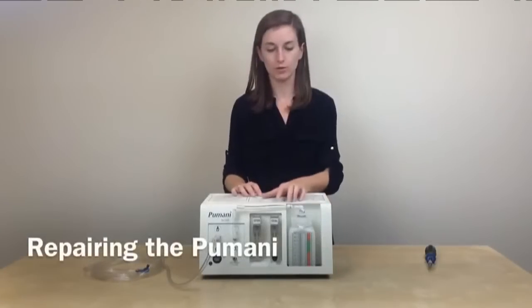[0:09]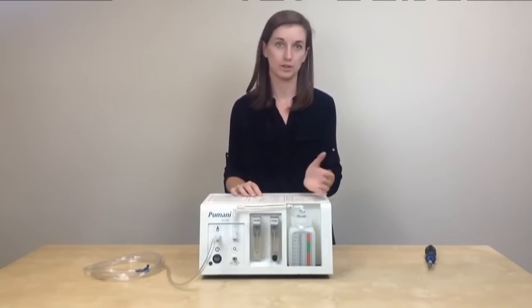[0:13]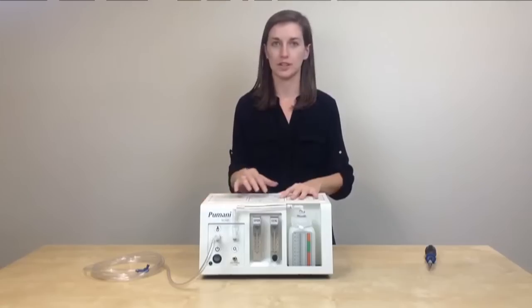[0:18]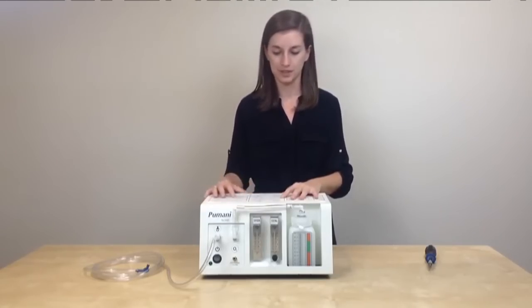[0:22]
If you notice that the total flow out of the Pumani is lower than it should be, so lower than 10 liters per minute, you may need to open up the unit to check for any loose connections, and you may need to replace the filter under the pump. So I'm going to explain how to open the unit, how to check for any loose connections, and how to replace the filter under the pump.
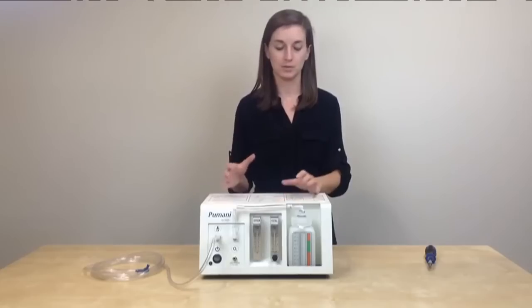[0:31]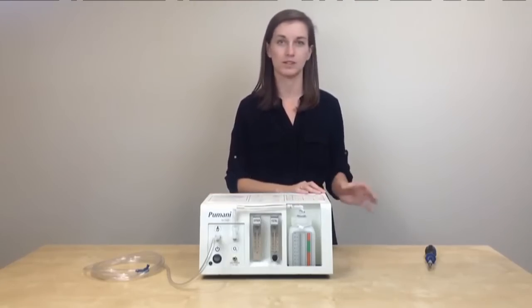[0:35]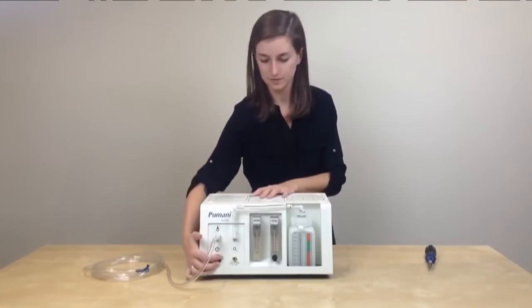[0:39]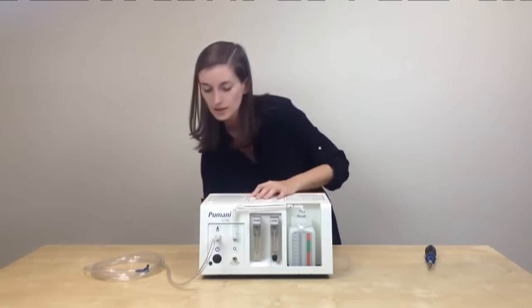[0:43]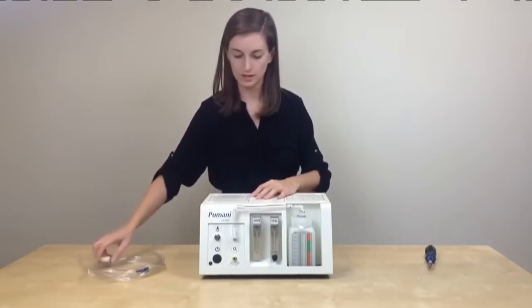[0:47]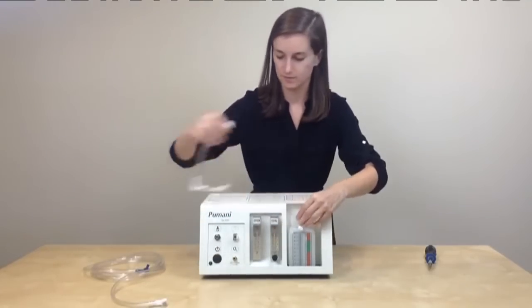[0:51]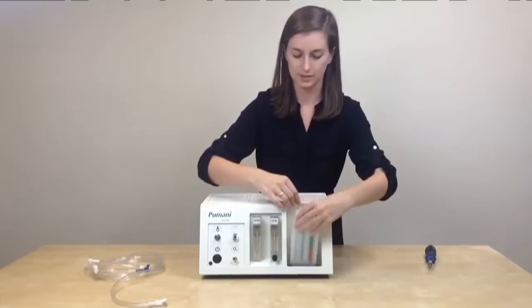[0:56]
So your first step should be to remove the patient from the Pumani, place them on another Pumani unit, or place them on an oxygen therapy. And then you'll want to turn off the unit and unplug the unit and detach the patient tubing from the bottle tubing. And you should also remove the bottle in case the water spills.
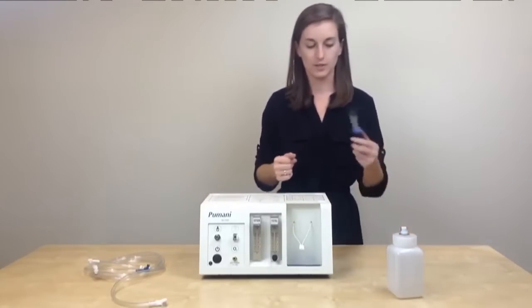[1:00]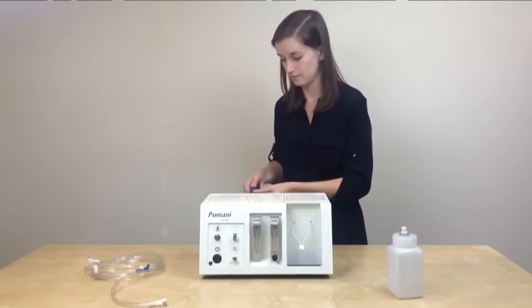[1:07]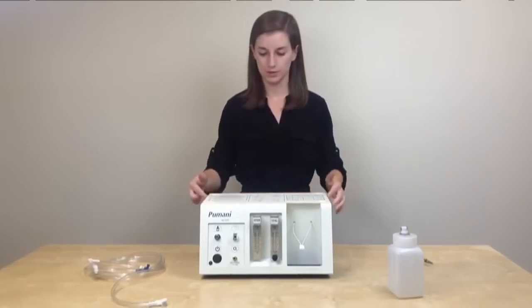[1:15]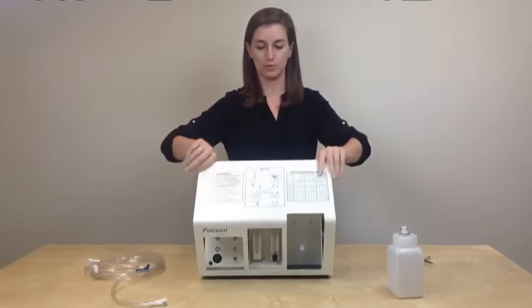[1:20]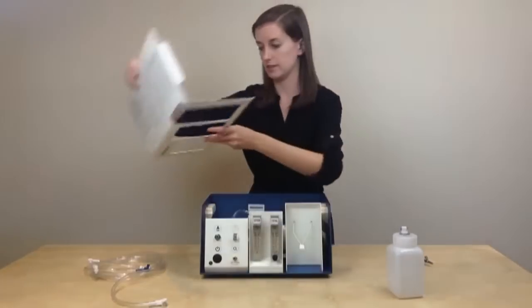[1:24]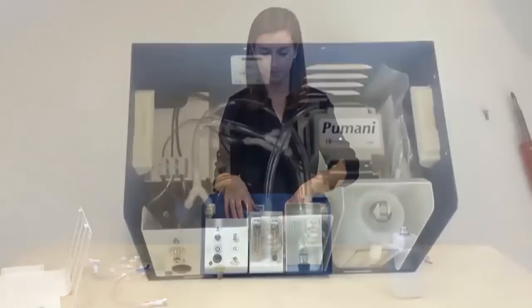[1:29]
And then you will take a Phillips head screwdriver to loosen the 6 screws around the outside of the Pumani. Once you've removed the screws from the outside, you can lift up and remove the lid from the unit. And place the lid aside. And now you have access to the inside of the unit.
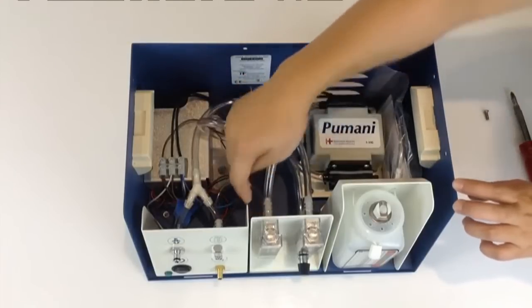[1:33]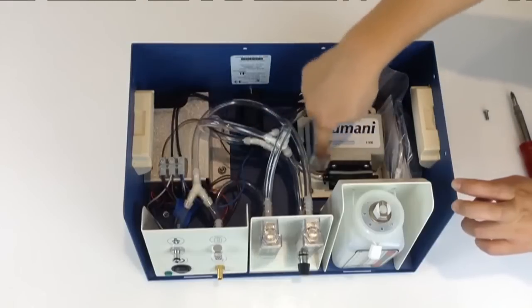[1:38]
You should check all of the tubing connections inside of the unit. Make sure everything is connected. If you notice something is disconnected, make sure to reconnect it and then check the flow again.
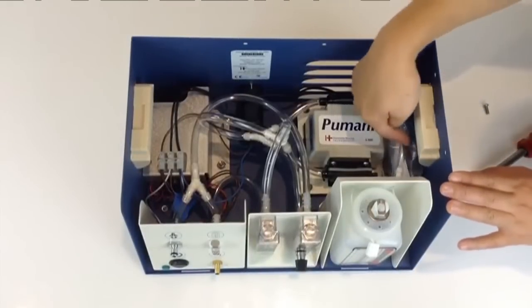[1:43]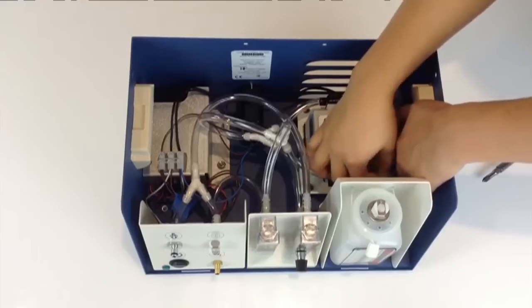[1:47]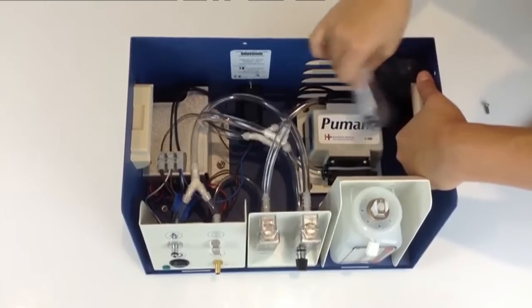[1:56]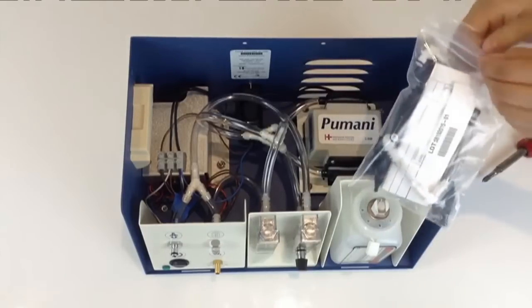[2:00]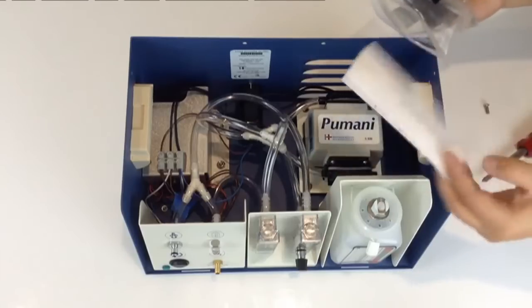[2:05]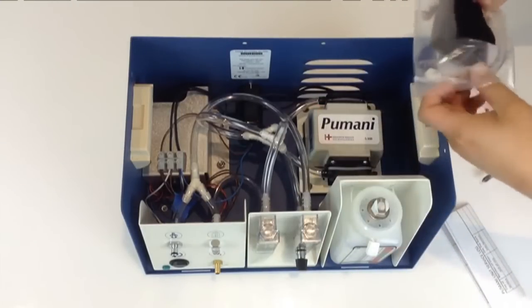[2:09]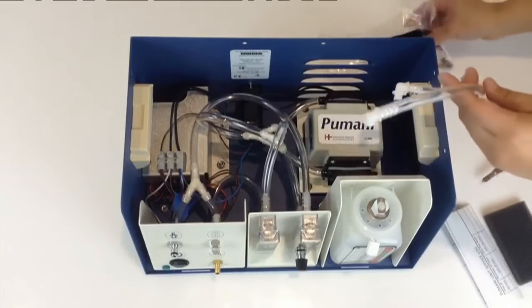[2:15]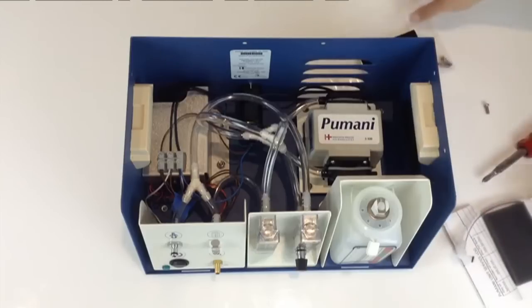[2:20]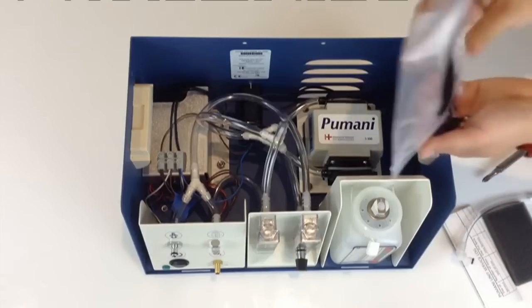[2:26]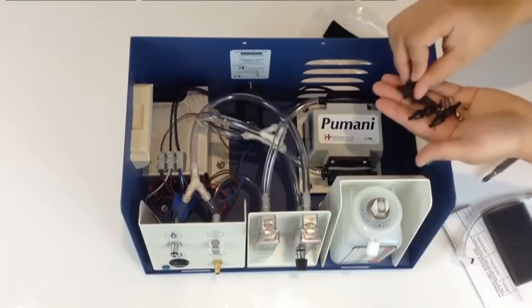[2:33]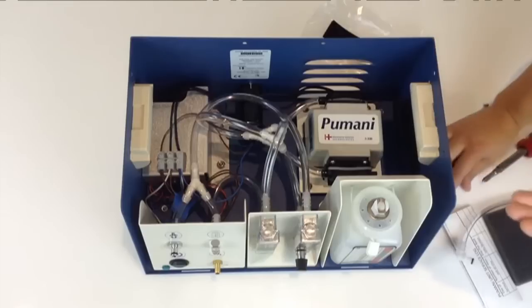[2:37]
Remove the spare parts kit from the wall of the unit and tear it off of the Velcro on the side. And once the kit is removed, you'll want to open the kit and view the contents. The kit should contain the service log, the foam filter that goes under the pump, a bottle tube, and 4 rubber pump feet. Two spare Phillips head screws. And 2 replacement pieces.
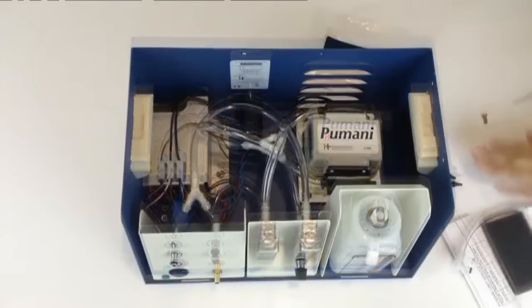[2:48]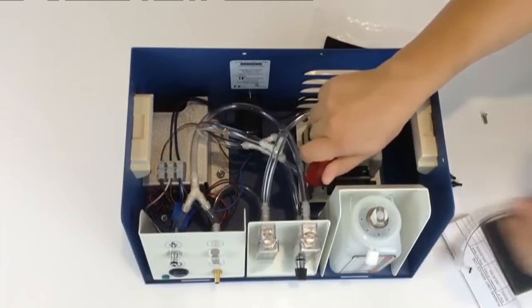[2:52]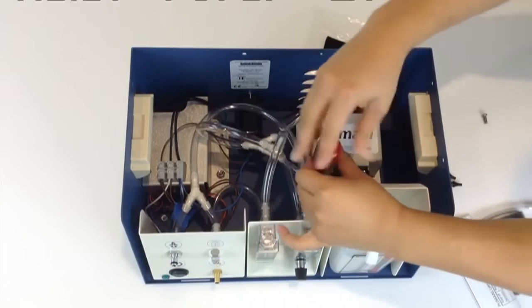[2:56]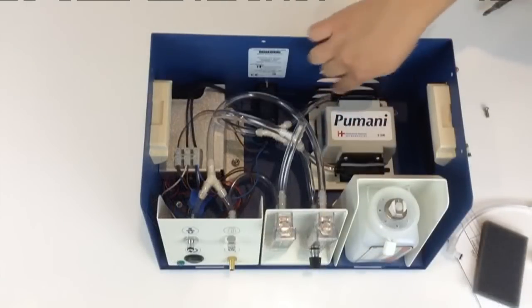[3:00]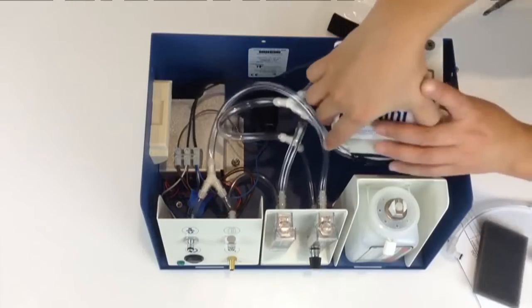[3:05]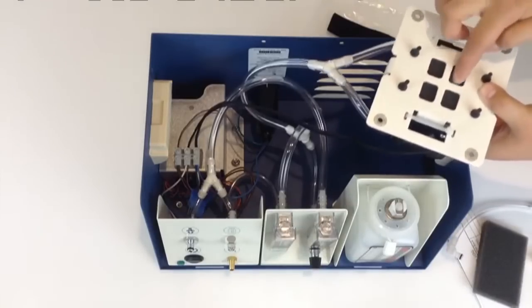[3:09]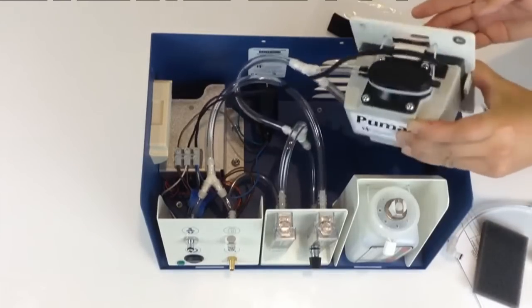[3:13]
To remove the filter, you'll need to remove the pump from the unit. Use a Phillips screwdriver to remove the 4 screws holding the pump to the unit. Once the 4 screws are removed from the pump, you can lift the pump up and out of the unit and turn it over. Check the filter to see if it is dirty. If it looks dirty or clogged, you'll want to remove the filter.
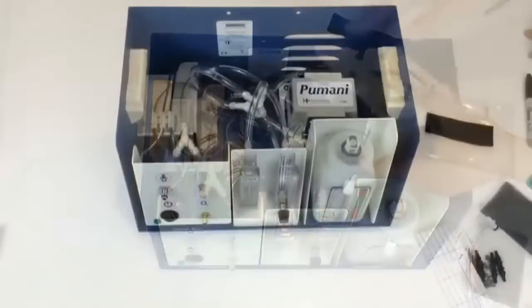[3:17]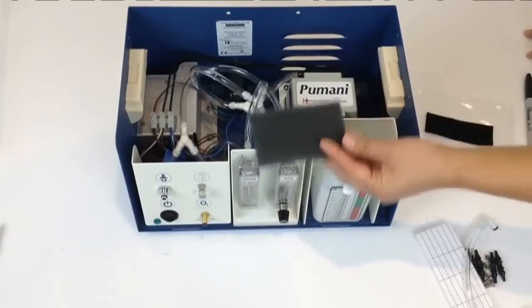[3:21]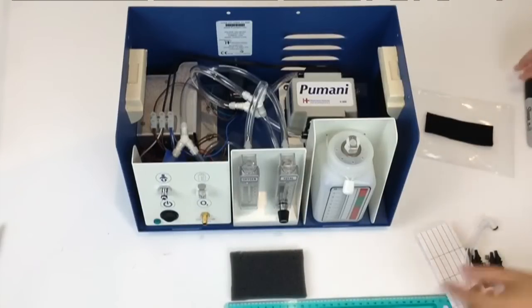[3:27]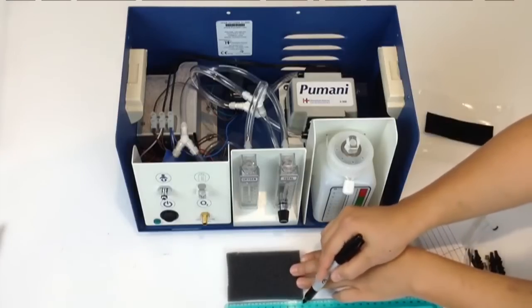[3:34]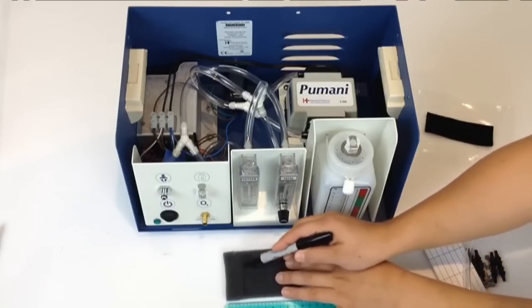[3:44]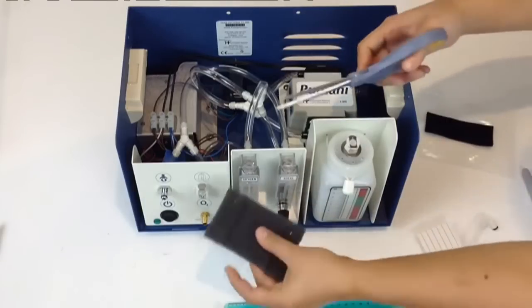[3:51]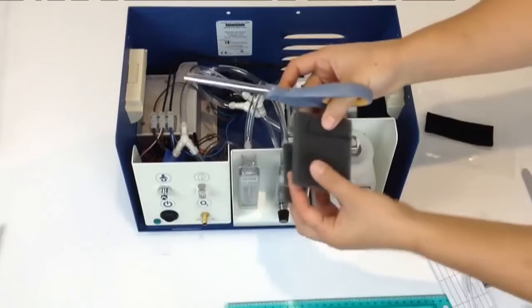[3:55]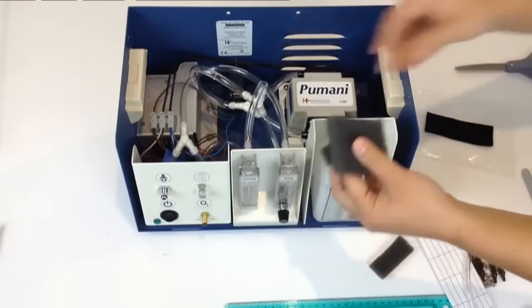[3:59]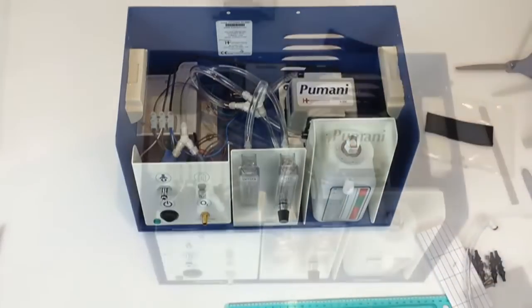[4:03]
You'll take the spare filter from the spare parts kit, and you're going to need to trim the filter down so that you can fit it under the pump. So the length of the filter is 10 centimeters, which you can see here. You're going to trim 2 centimeters off of one side and 2 centimeters off of another. So you can mark it at 2 and at 8 centimeters with a Sharpie. Then you'll take scissors and you'll cut along those 2 lines, trimming 2 centimeters off of each side of the filter. And now your filter is ready to go under the pump.
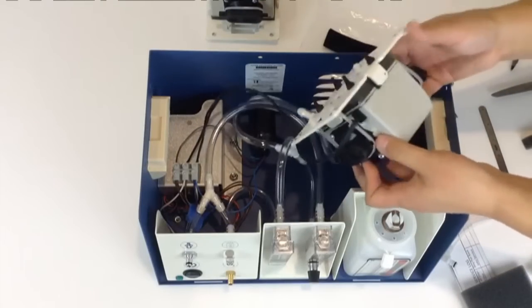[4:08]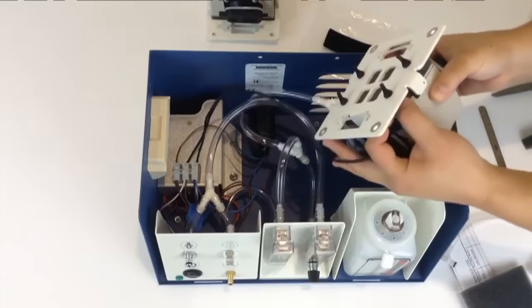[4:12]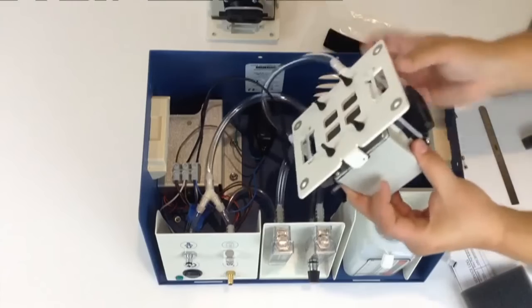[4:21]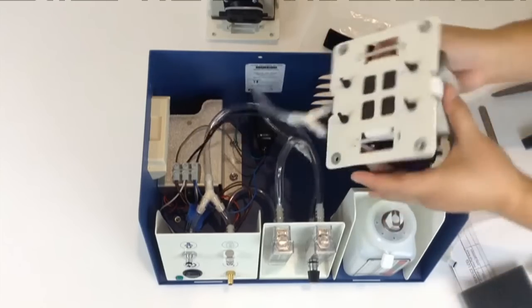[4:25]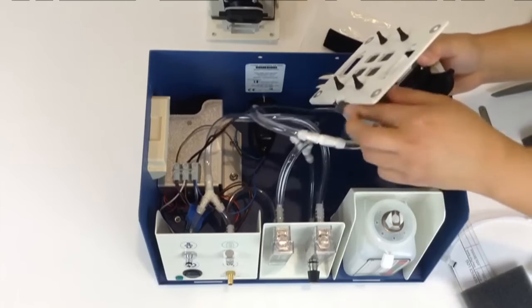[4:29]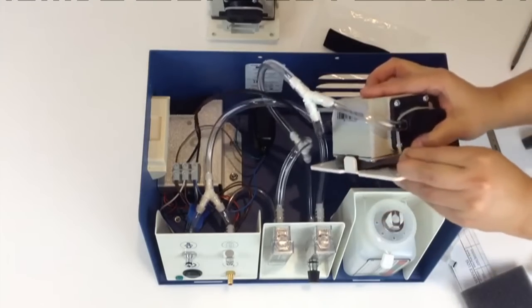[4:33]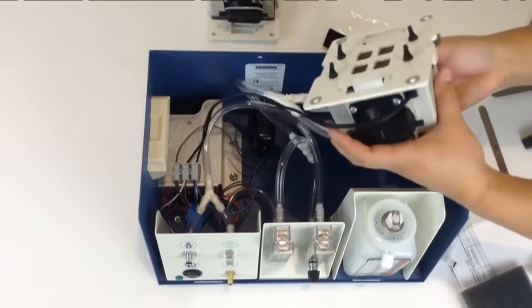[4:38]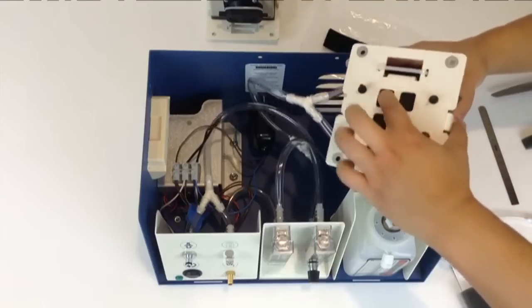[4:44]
You're now going to remove the old filter, take the pump and turn it upside down. You'll need to tear the filter out from under the base and tear it around the 4 rubber feet under the pump. You'll need to pull fairly hard to completely remove the filter from around the 4 feet. So continue to pull on the filter, tear the filter until it's completely detached from all 4 feet. And once the filter is torn around the feet, you can push the filter through that hole with your finger. Continue to push on the filter and try to slide it out from under the base.
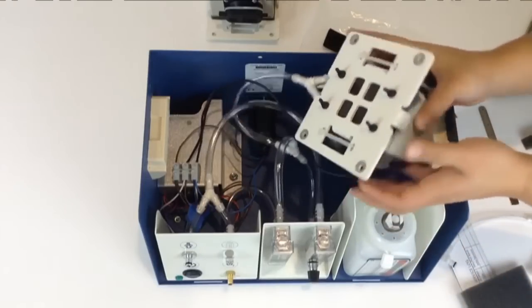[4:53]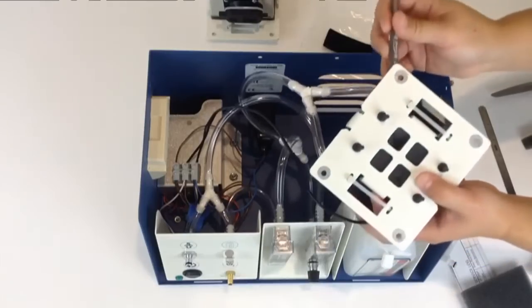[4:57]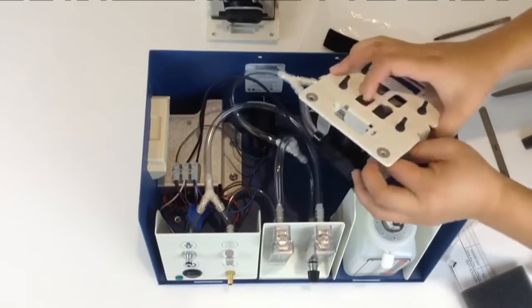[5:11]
You can also take a pen or a small pointed object and push on the filter through one of the corners until the filter becomes loose and you can pull the filter out from under the base. And once the filter is removed, set it aside and throw it away.
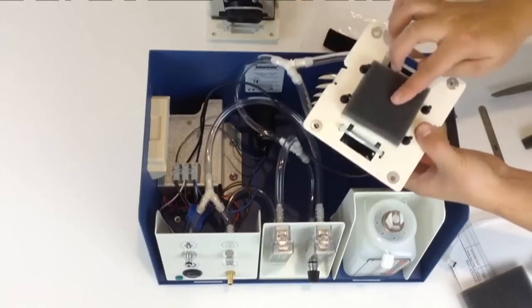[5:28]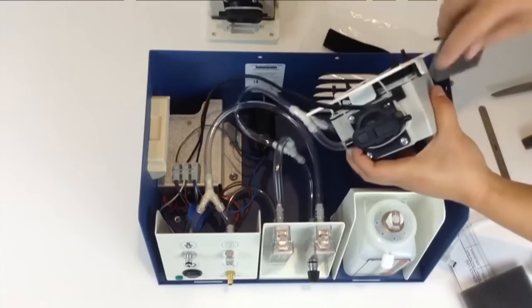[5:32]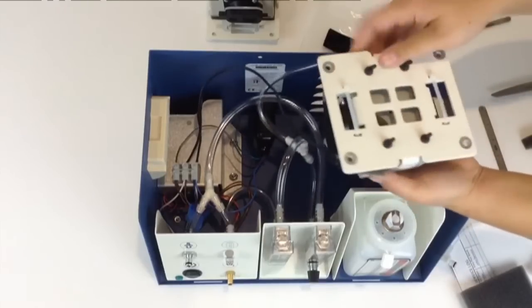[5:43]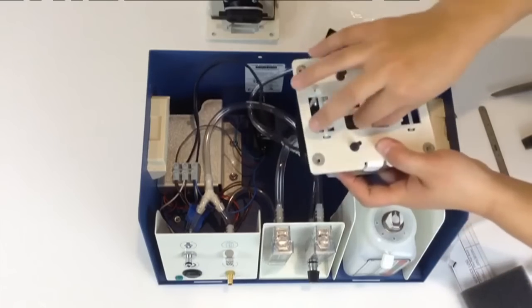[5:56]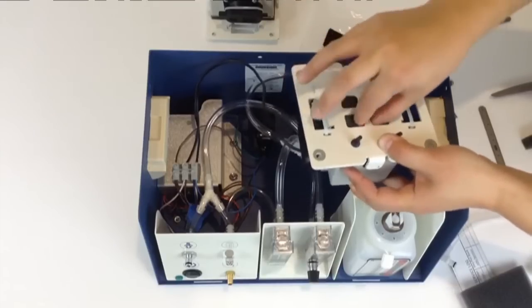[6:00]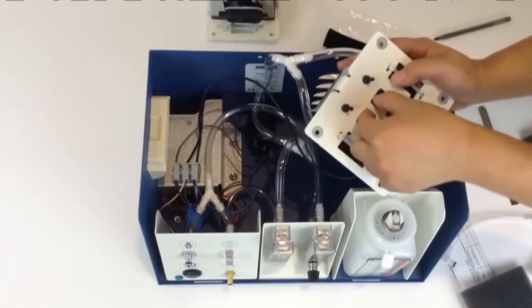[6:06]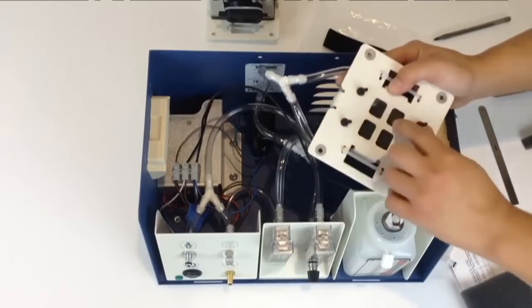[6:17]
Take your new filter and you're going to insert it under the pump base so that you're covering the entrance of the pump. So you're going to compress the filter and push it into a corner and under the base over the pump. You can also use the holes in the base to try to pull the filter through. You'll need to slowly push and pull it until the filter completely goes into place. And it should fill all four squares on the pump base. So keep pulling it and pushing it until the filter is flat and covering all four holes.
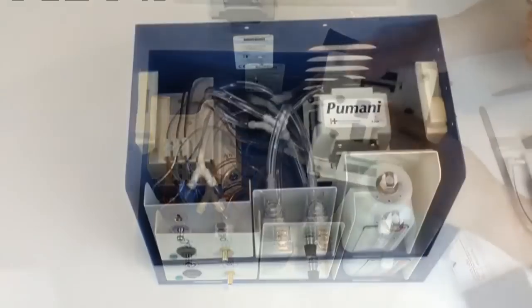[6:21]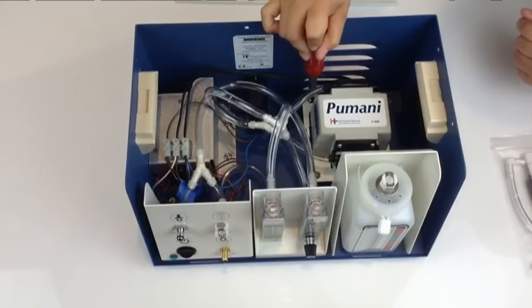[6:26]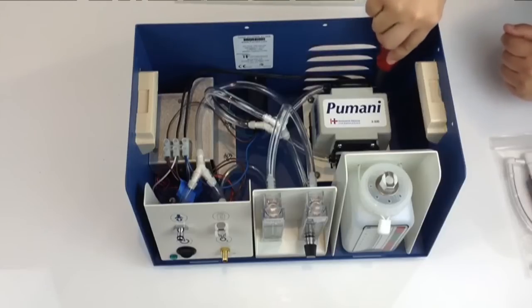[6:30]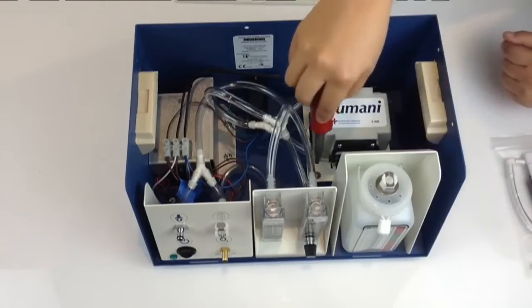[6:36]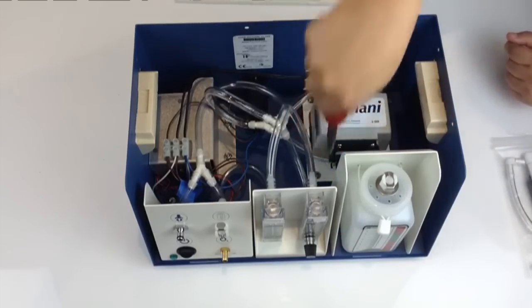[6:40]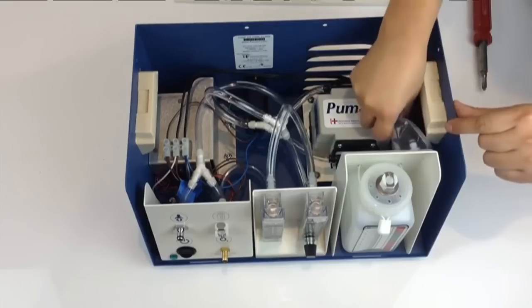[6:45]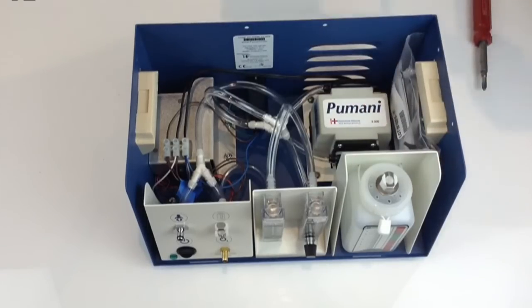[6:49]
Now that the filter has been replaced, you can reattach the pump and base to the unit. Take the four screws and reattach with the screwdriver. Once you've attached all four screws with the screwdriver, making sure it's securely attached, you can then put the contents of the spare kit parts back into the bag and reattach the bag to the wall of the unit.
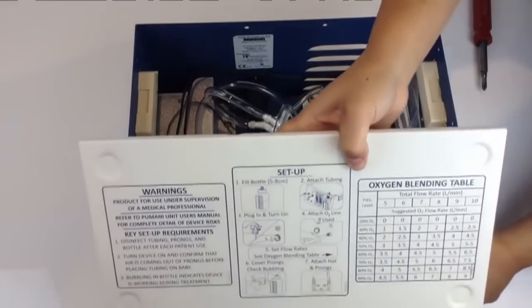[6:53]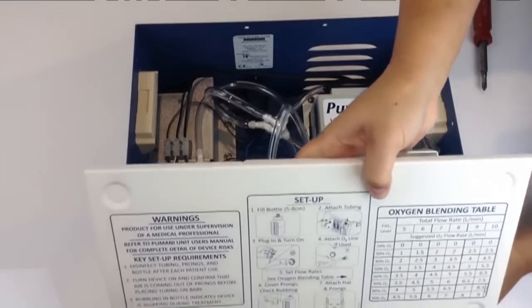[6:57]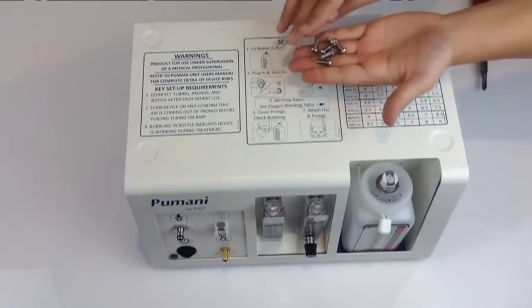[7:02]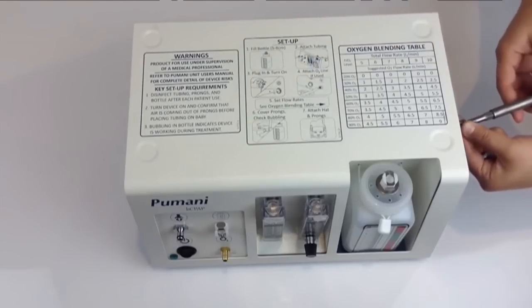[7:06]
You'll then take the lid and place the lid back on the unit, making sure it snaps into place. And then you'll take your six screws and secure the lid with the six screws.
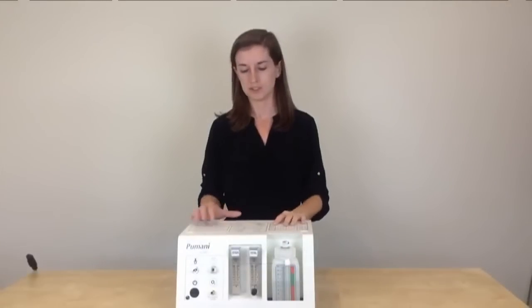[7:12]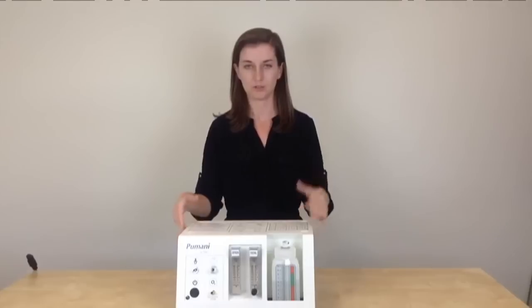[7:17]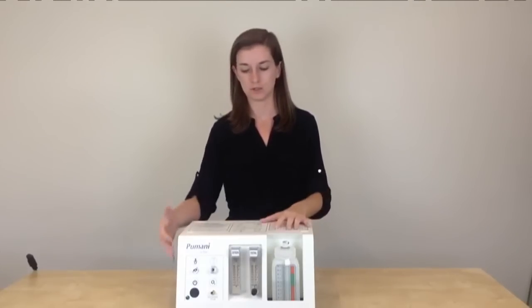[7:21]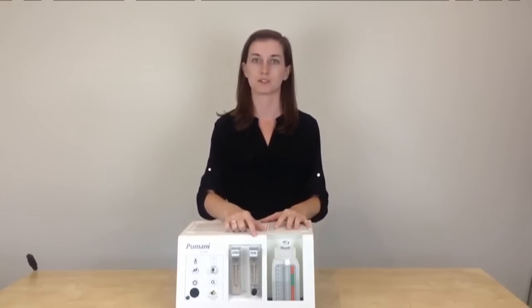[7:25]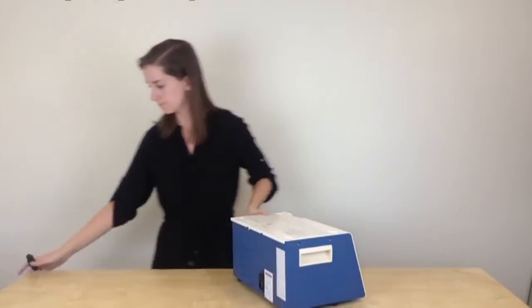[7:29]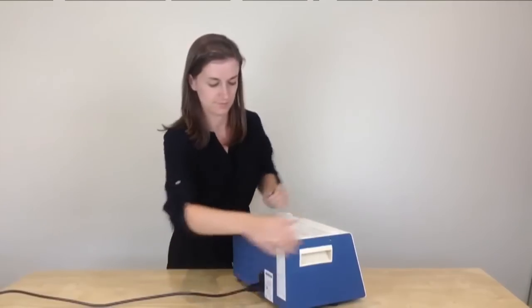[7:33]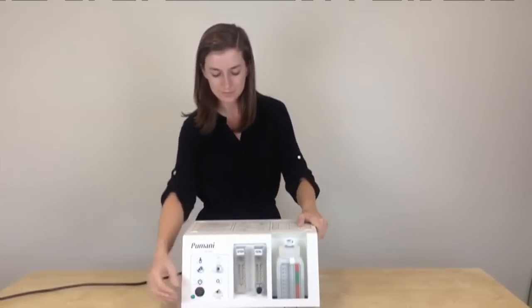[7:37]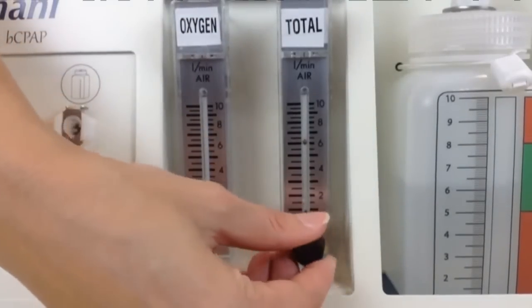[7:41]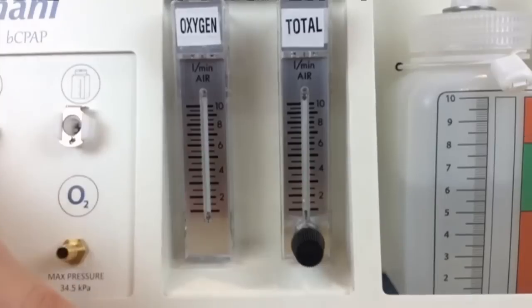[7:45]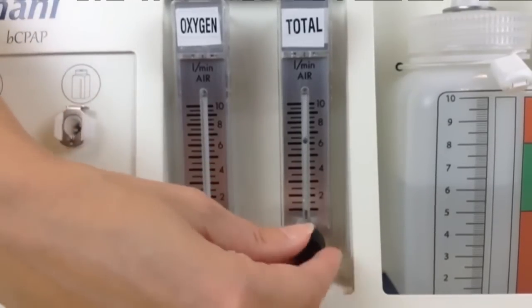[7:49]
Now that you have replaced the filter under the pump, you've reattached the pump, and you've closed the unit and tightened the screws around the unit, you will need to turn on the unit and make sure that the total flow goes up to 10 liters per minute. So you'll need to plug in the unit in the back. Turn on the unit and look at the total flow meter. Adjust it until it increases up to 10 liters per minute and then set it back at the flow that you would like to provide to the patient. And now your Pumani should be working correctly.